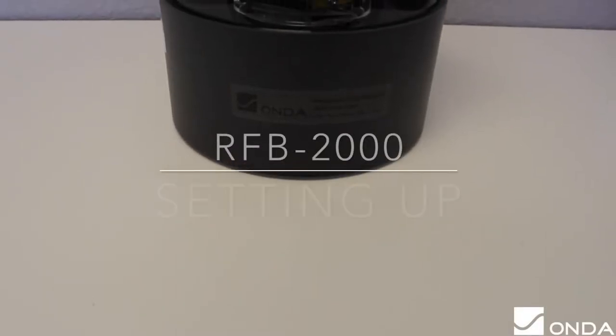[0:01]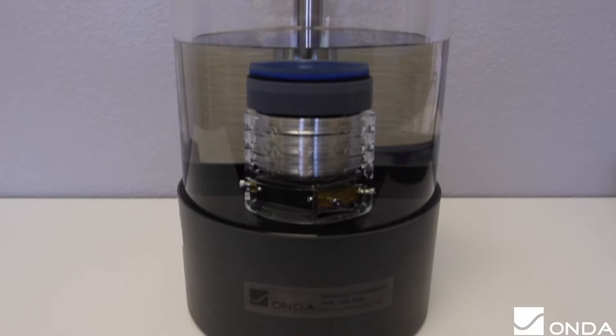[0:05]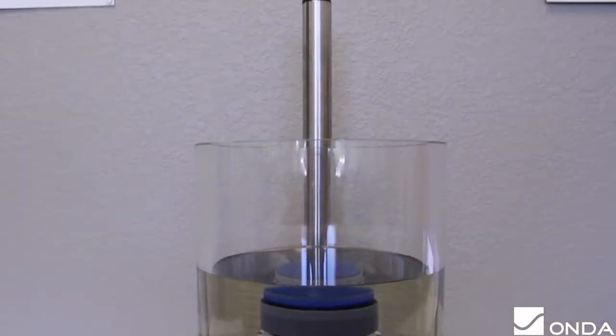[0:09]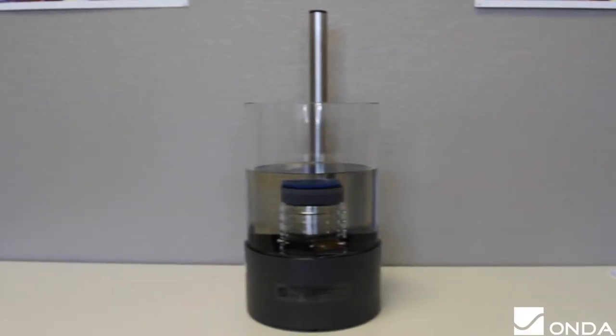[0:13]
The ONDA RFB-2000 is designed specifically for the measurement of ultrasound power and easily handles a wide range of diagnostic, physiotherapy, HIFU ultrasound products, and laboratory devices without requiring extensive need for correction factors.
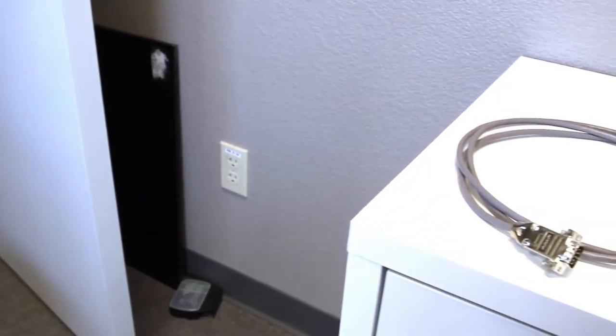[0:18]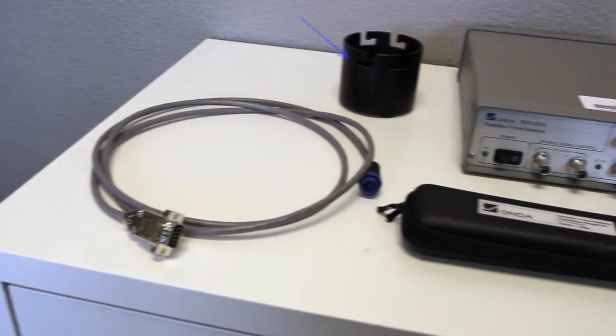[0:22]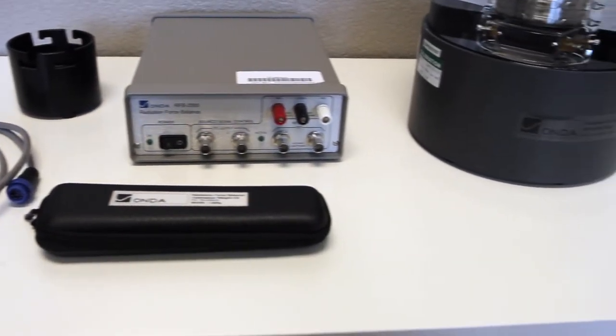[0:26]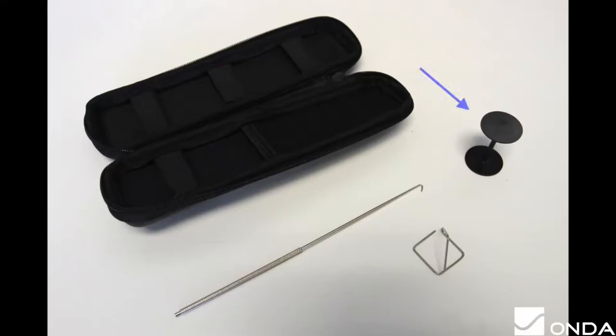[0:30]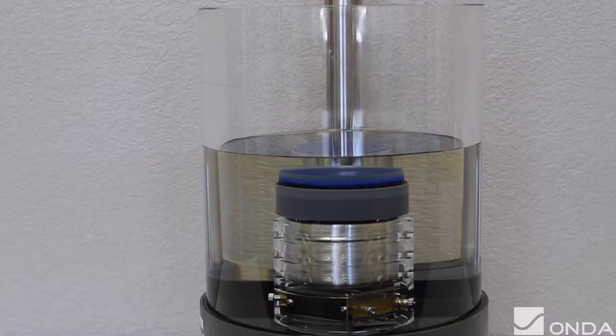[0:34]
The RFB-2000 consists of cables for the electronic controller, a base for easy storage, a weight kit, and the electronic controller. The calibration kit includes a plastic stand, a metal hook reach, and a known 1.0 gram mass.
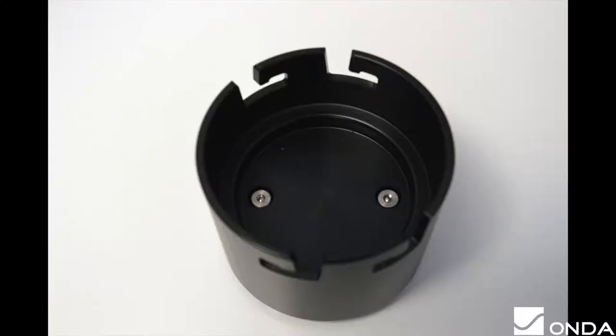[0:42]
Before making any measurements, check to see that the tank is free of any foreign objects and that the sensor is placed on the plastic unit base when not in use. The sensor is designed with magnets integrated to the bottom of the assembly, which can cause inadvertent damage if the sensor is placed on a metallic surface.
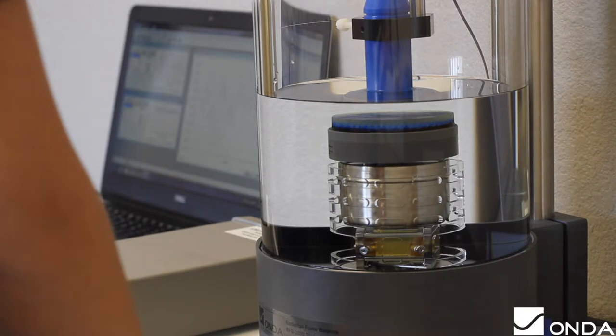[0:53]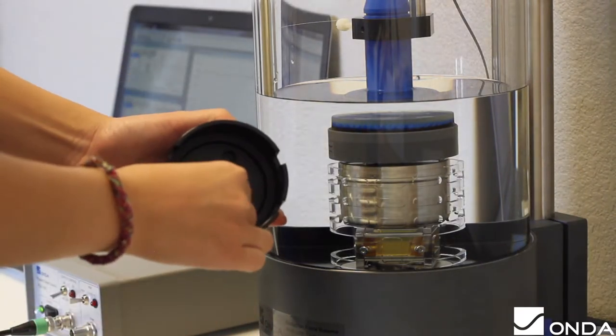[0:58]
To start off, unpack the sensor by taking off the plastic cap and taking out the pins. The pins can then be placed in the black plastic base for easy storage.
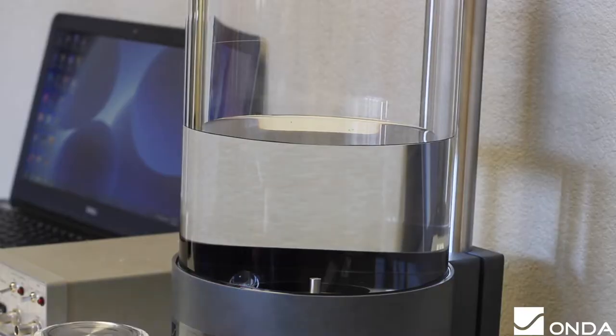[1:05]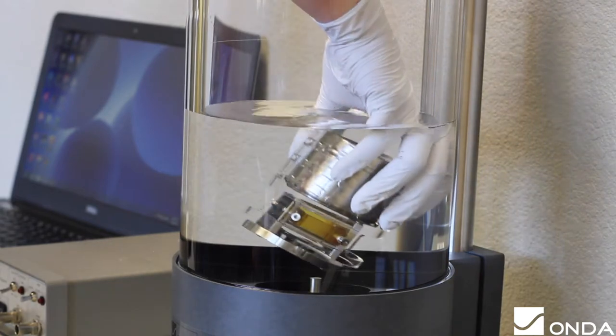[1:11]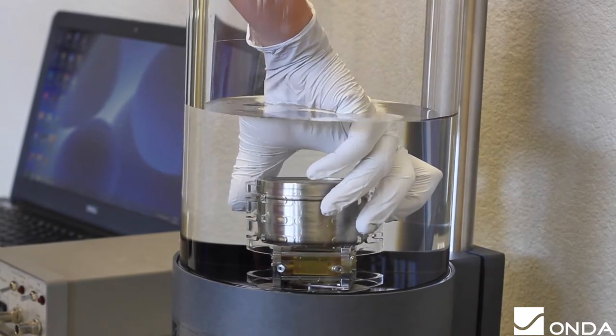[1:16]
When placing the sensor in the tank, make sure that the base is parallel with the bottom of the tank and resting on the three screws. Then place the target on top, making sure to line it up with the rest of the sensor.
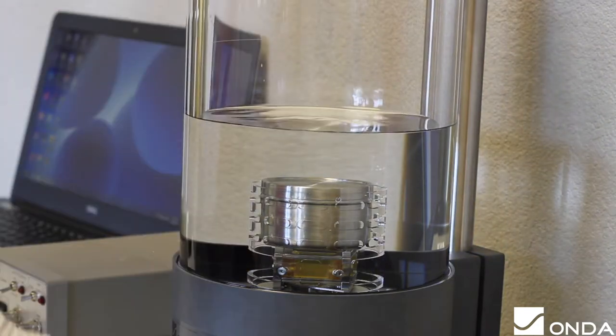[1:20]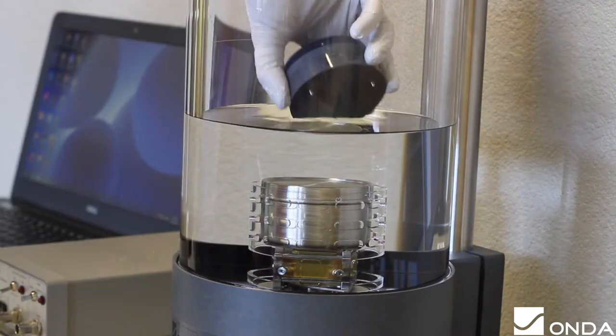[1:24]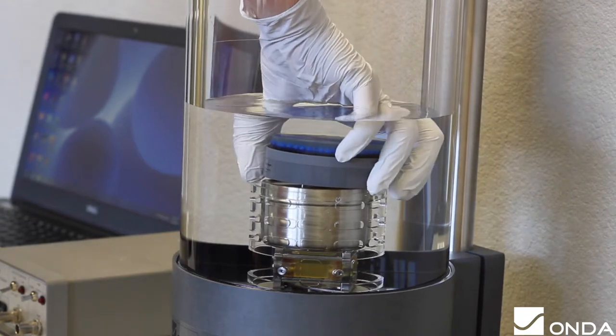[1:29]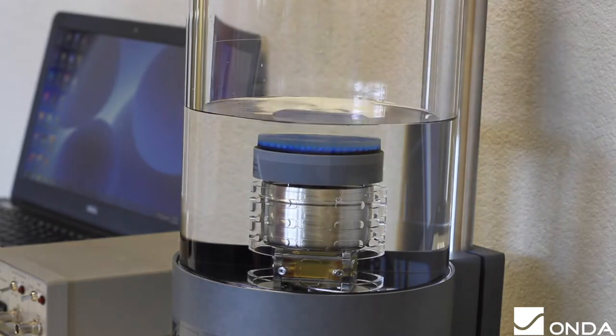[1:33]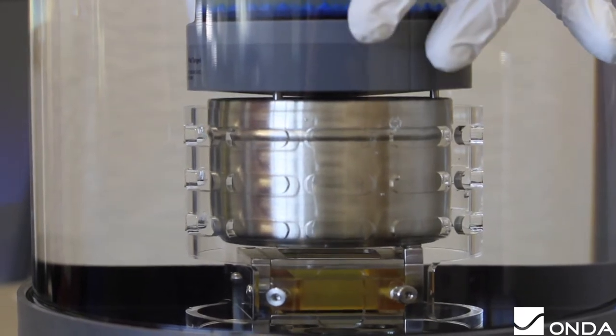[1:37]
In order to check on whether or not the sensor is set up correctly, gently push the sensor to the bottom of the tank. With the water level in the tank above the sensor, the can of the sensor should be able to float to the top of its range. It should be possible to gently push the sensor float down by 1 millimeter with a finger.
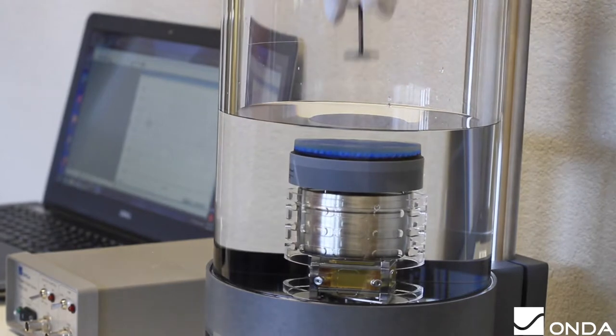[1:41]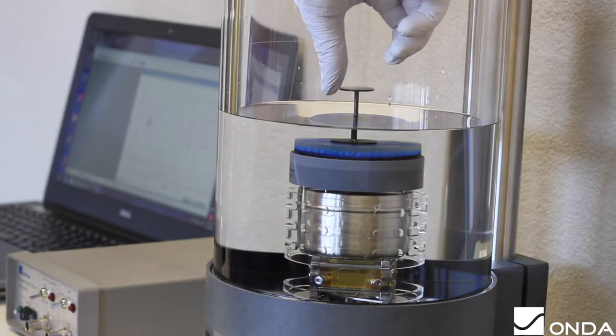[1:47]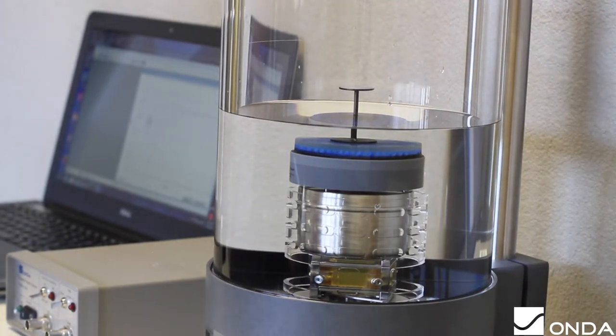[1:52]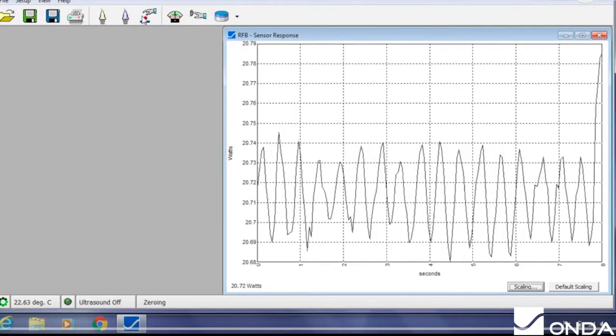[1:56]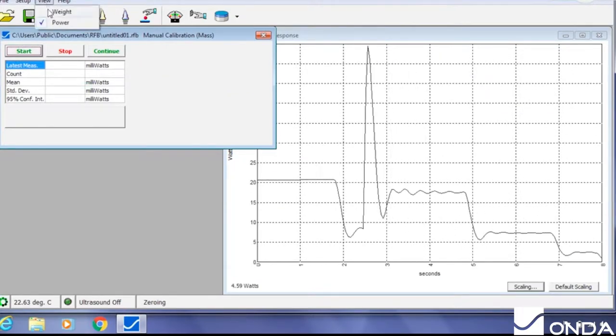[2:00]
To calibrate the RFB-2000, place the plastic stand vertically on top of the sensor so that half of the stand is above water and the other half below. This will allow the user to apply the calibrated standard weight to simulate a constant ultrasound power. After entering the known weight of the calibration reference mass when prompted, press OK to read and acknowledge the instructions.
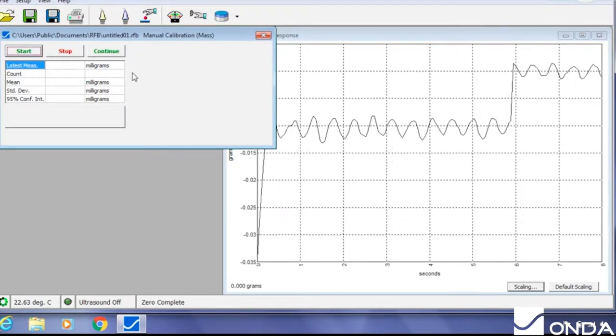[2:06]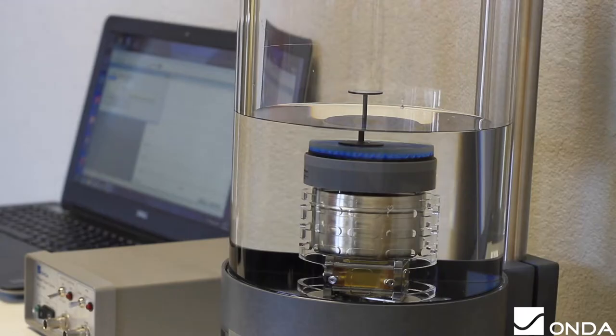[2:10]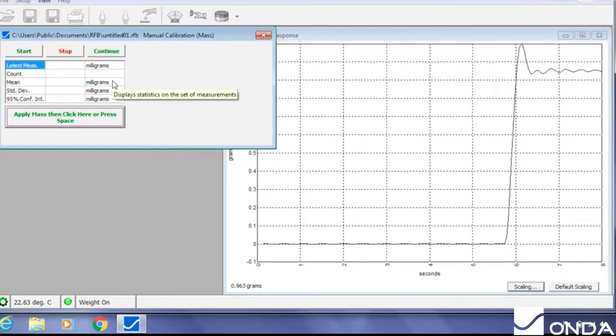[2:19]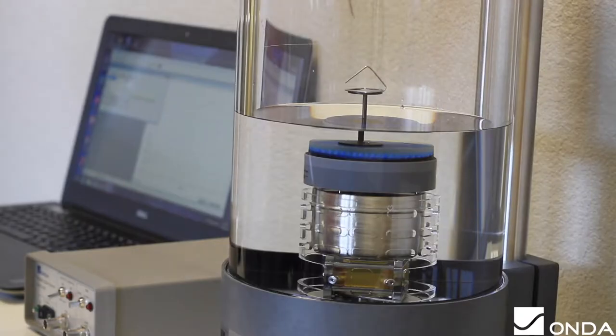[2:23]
When you click Start, the button below the table will read wait in red, and then change to apply mass in green. It will also play a sound when it's time to apply or remove the mass. Place the mass on the platform and press Enter or the spacebar. The button will again read wait, and after 2 seconds will change to remove mass.
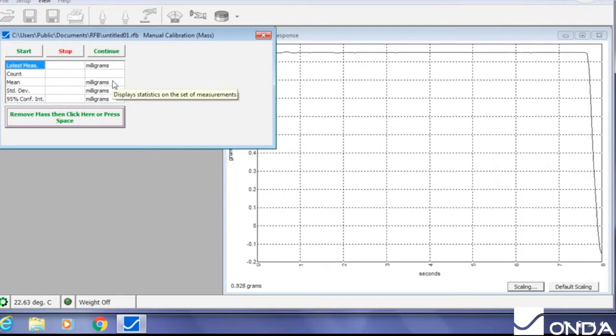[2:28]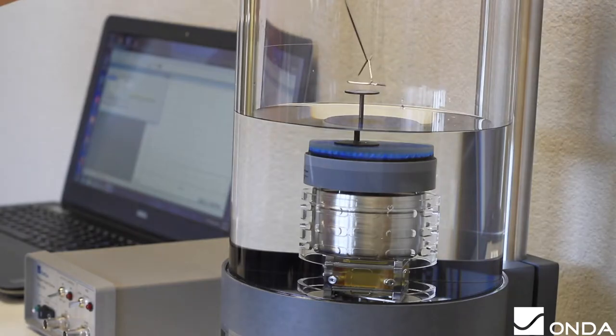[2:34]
Continue this process for several cycles and then click stop. Multiple measurement cycles are allowed to average out random variations in the measurement. We recommend repeating these steps for at least 3 cycles.
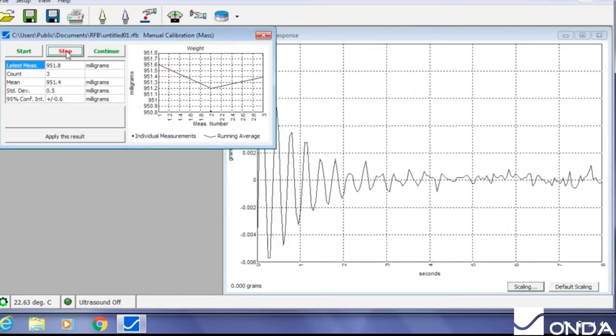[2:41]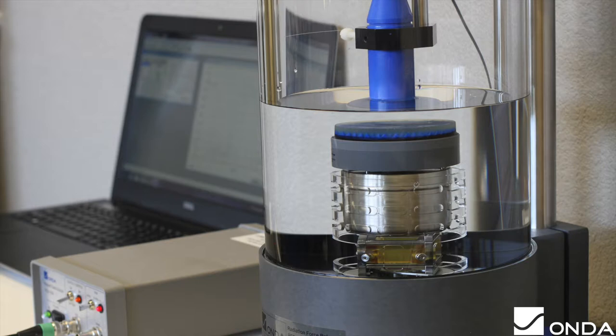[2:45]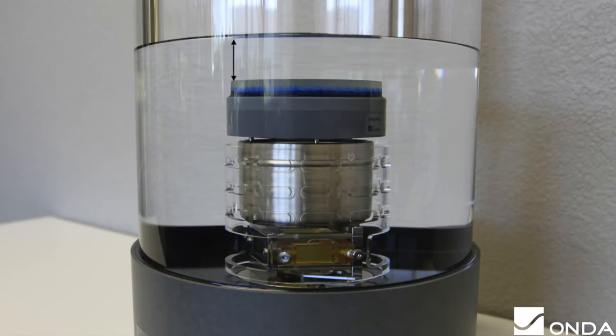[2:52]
Once the cycles are done, click apply this result and the calibration result will be stored in the program setup information. When finished with the calibration, just follow the on-screen instructions to start measuring. One recommendation when making measurements is to use filtered water that is degassed and deionized, and that the water level should be 15 to 25 millimeters above the target.
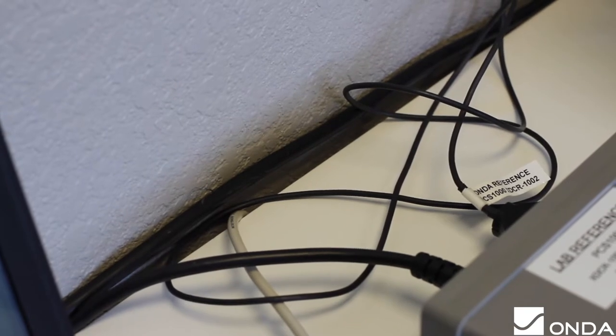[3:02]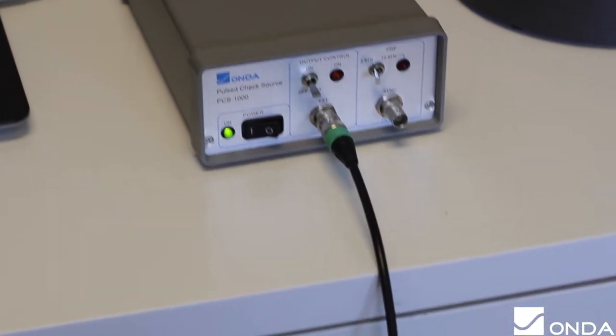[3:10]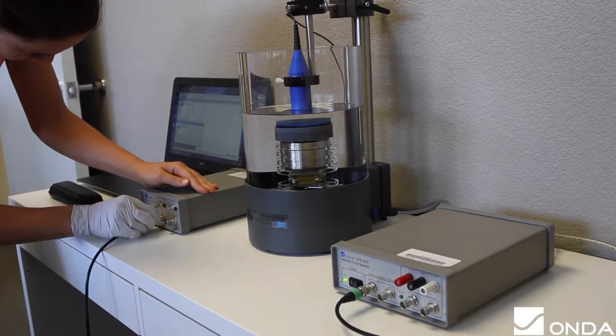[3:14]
Some questions to ask when encountering problems are, is the sensor mechanism free of bubbles? Is the controller on and are both ends of the cable to the tank connected? And is the controller connected to the computer? Damage such as bent or recessed pins on the cable can lead to inconclusive measurements.
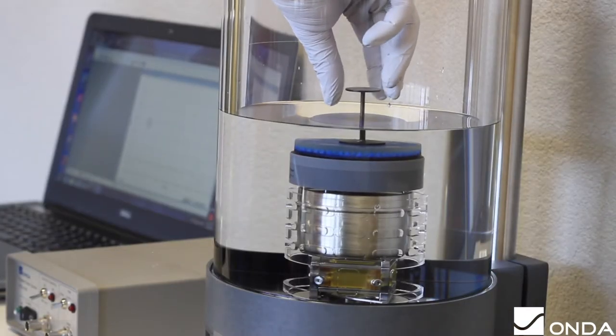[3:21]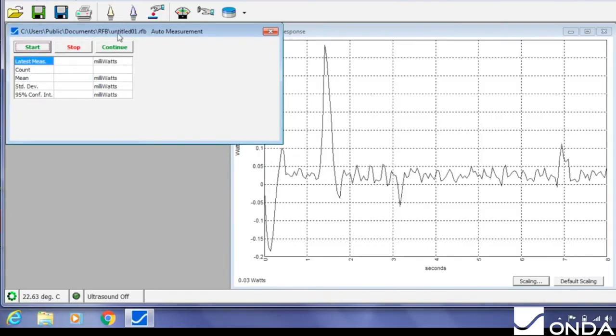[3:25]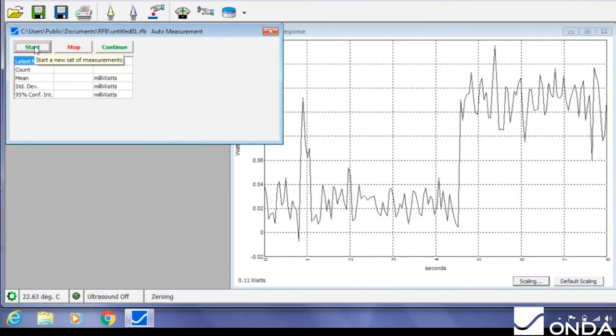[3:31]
When running the mass cal, make sure to remove the stand and re-zero the system before exiting the calibration routine. When the software is checking the position sensor, the user should watch to see if the sensor is going between the lower and upper stops. If the position sensor results are not good, make sure that the sensor is properly seated, and if it is, visually check to see if the hinges are broken.
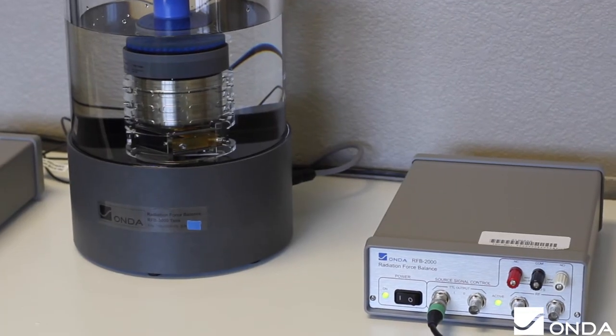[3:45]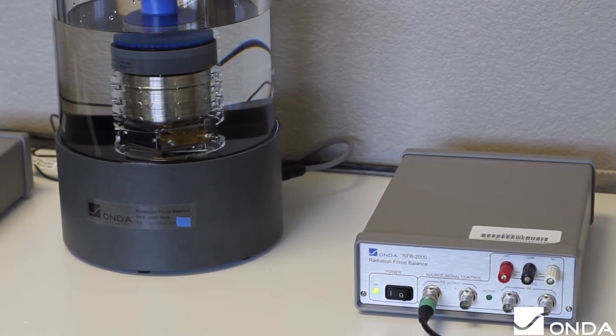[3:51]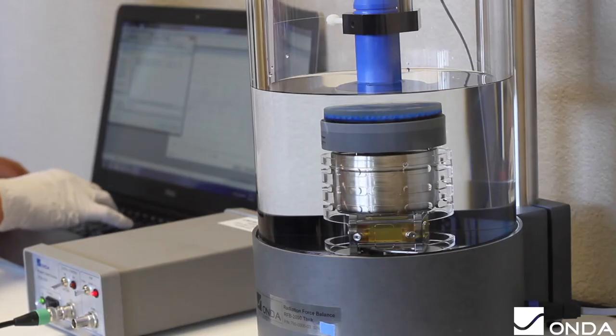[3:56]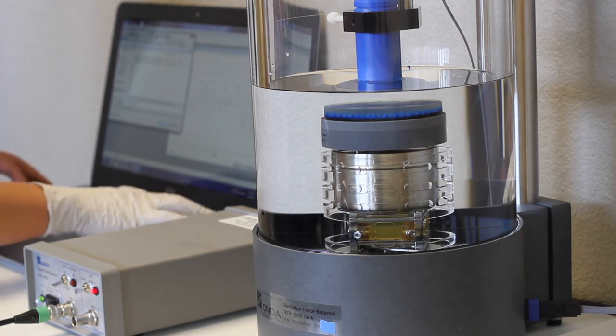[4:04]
The RFB-2000 is visually transparent for easy monitoring of the test transducer, making it easy to set up and use. The system provides convenient support for transducer mounting and requires no special membranes or acoustic gel. We recommend changing the water as often as daily and having the RFB professionally calibrated every 2 years.